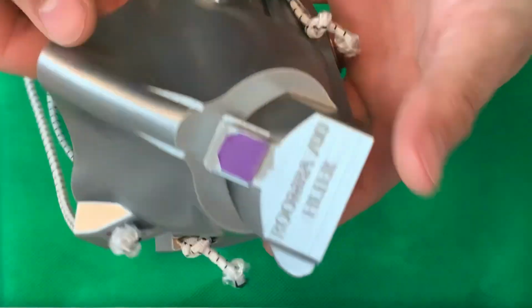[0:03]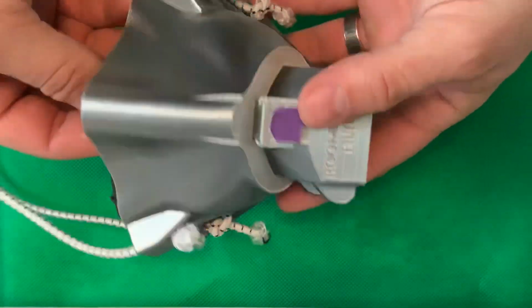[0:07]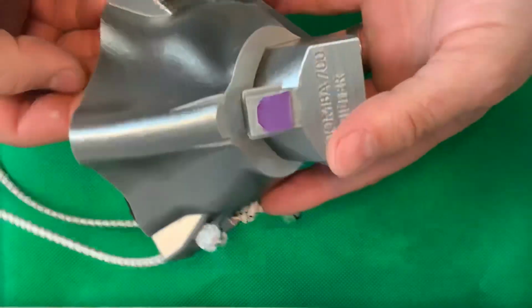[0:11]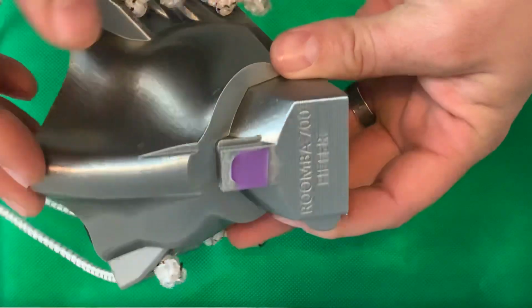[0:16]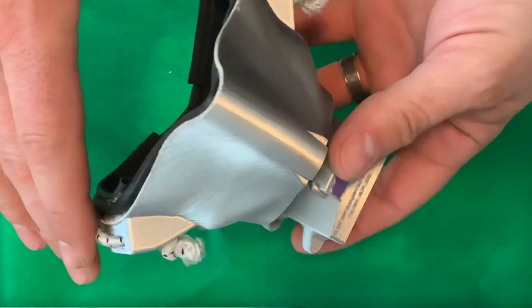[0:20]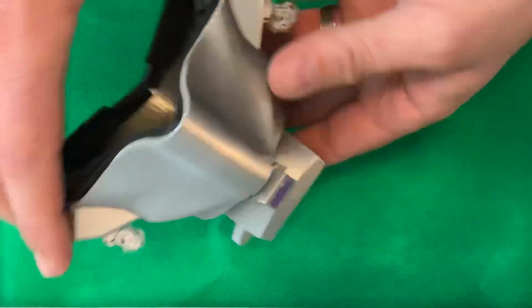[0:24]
I have 400 seemingly different files on Thingiverse, but they're all essentially revolving around a single concept, and that is to be able to 3D print something that will provide a little bit better protection than, say, a t-shirt or a bandana. But in order for you to be able to print successfully, we have to go over some things.
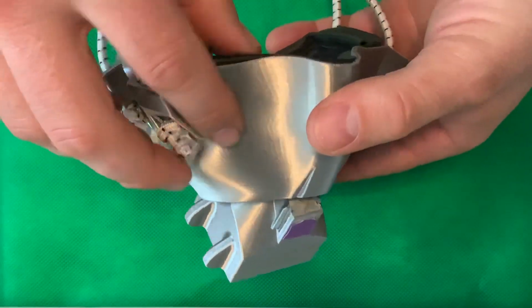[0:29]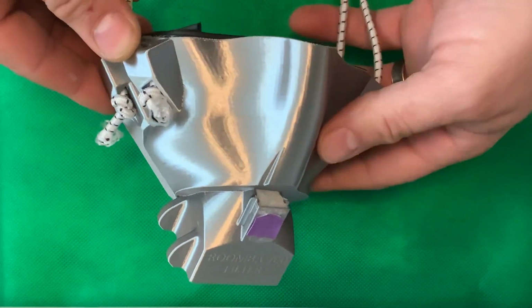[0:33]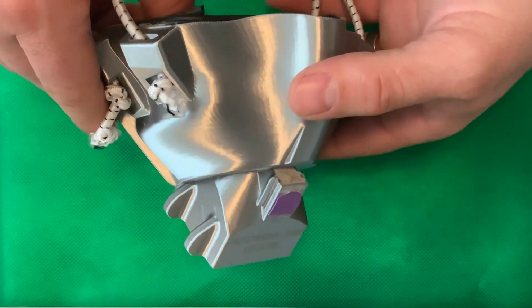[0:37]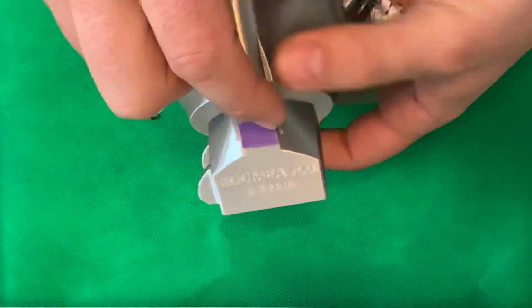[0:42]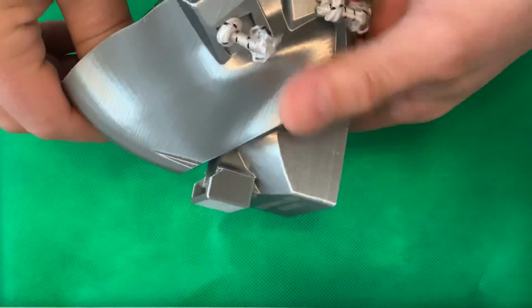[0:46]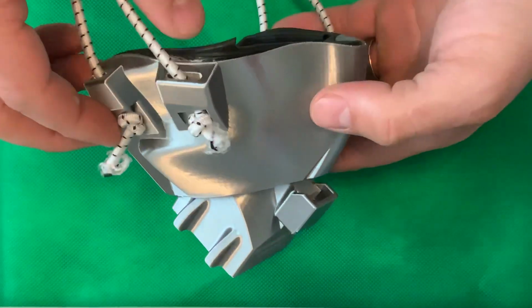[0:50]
One is the type of printer you're using. Most people, I assume, are printing with fused deposition modeling printers, FDM printers. These are the cheapest, most readily available printers found at most high schools, libraries, and things like that. Fused deposition modeling is a fantastic technology that enables very inexpensive prints. So a mask like this will print for probably like $3.
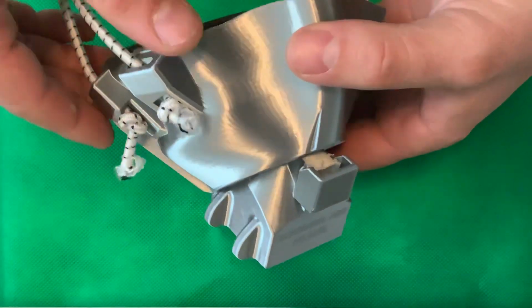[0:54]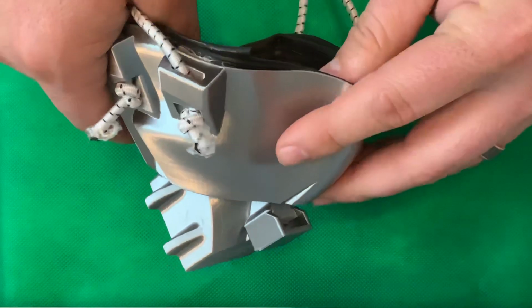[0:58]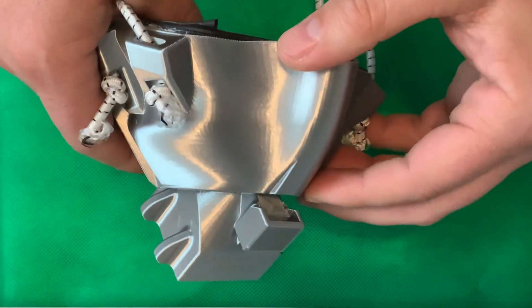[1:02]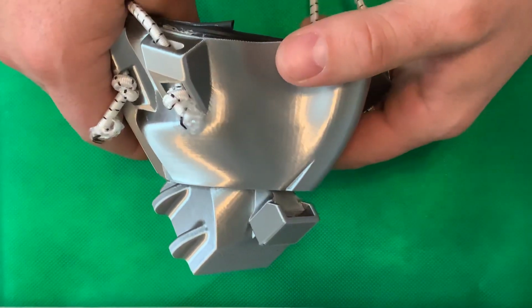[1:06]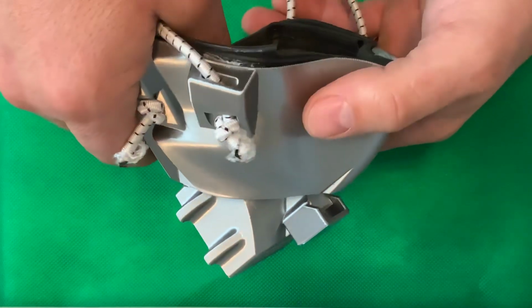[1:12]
Now, if you're using fused deposition modeling, we need to talk about some things. One of them is, what type of plastic are you using? There's many, many different types of plastic for FDM printing. The most expensive and super cool material is something called TPU. TPU is thermoplastic polyurethane. It is a flexible material.
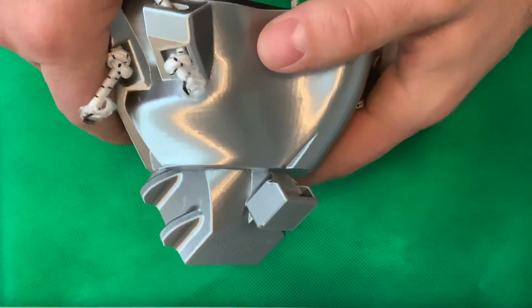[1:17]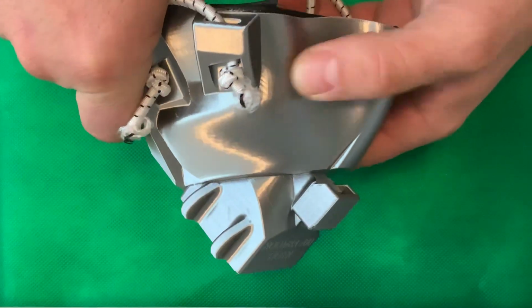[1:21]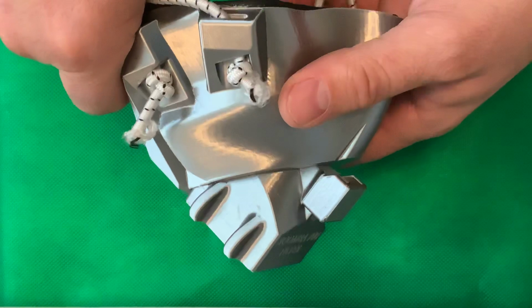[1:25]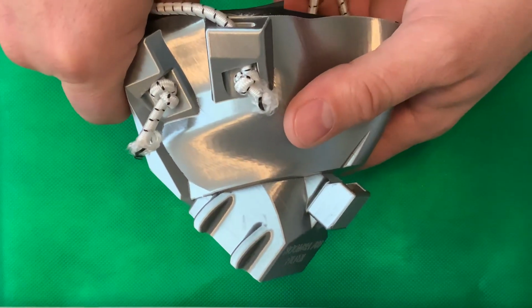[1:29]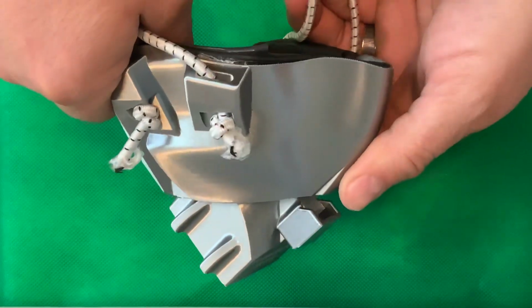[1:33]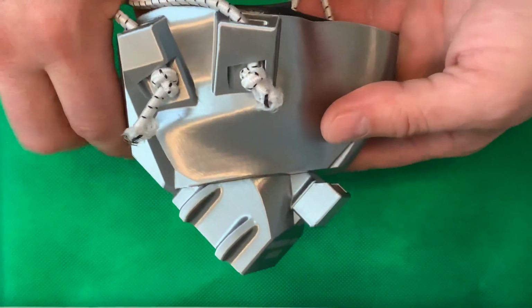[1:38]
I have a few TPU prints with this mask, and it's so, so awesome. The downside to TPU is that it's expensive, and it's also difficult for a lot of printers to print, and it is extremely slow. So a mask like this will take 18 to 24 hours to print in TPU. So most people are not going to print in TPU.
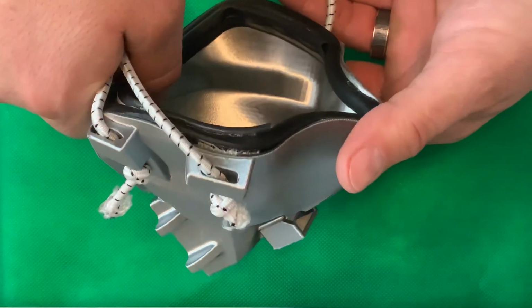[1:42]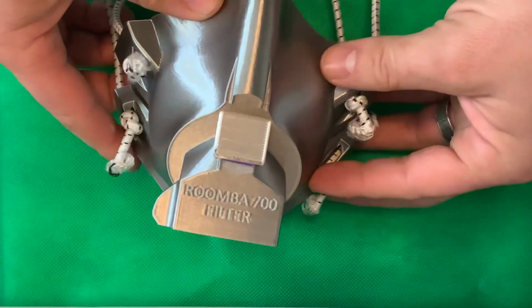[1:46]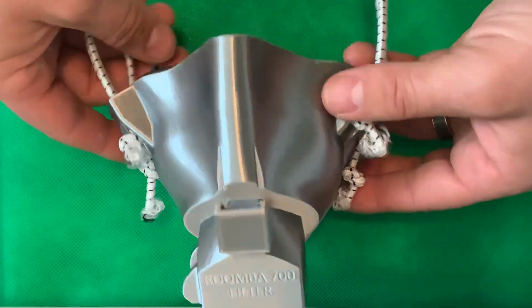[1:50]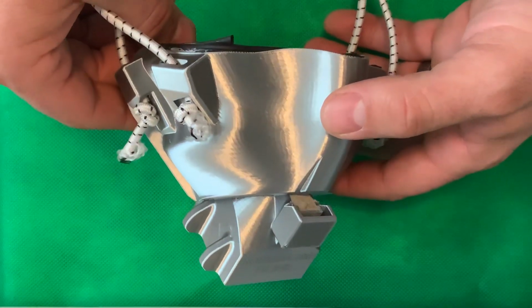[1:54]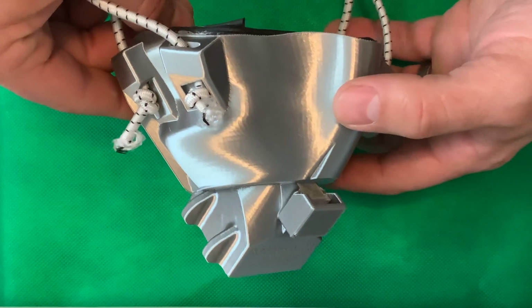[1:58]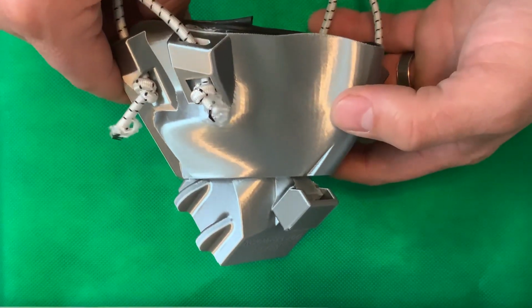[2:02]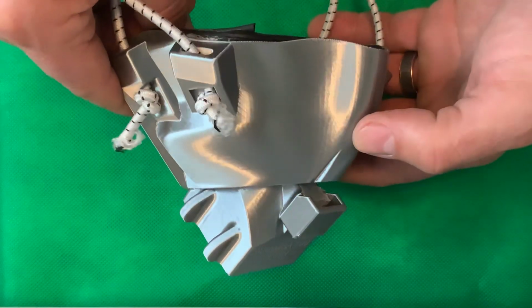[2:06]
The other type of material is PETG, which is polyethylene terephthalate. PETG is found in most water bottles, and it is a very biocompatible type of plastic. You could print PETG on most FDM printers. It does require a higher temperature, both print bed temperature and extrusion temperature. So you're going to be at more like 240, 250, 260 Celsius for the extruder, and the bed's going to be more like 80.
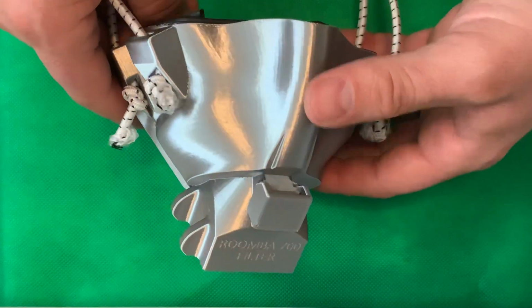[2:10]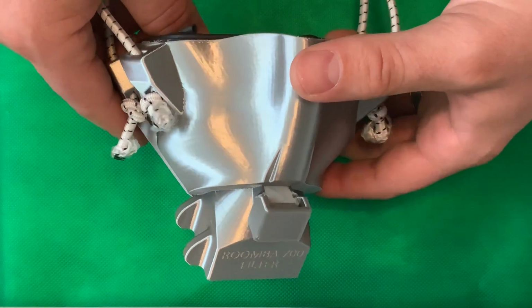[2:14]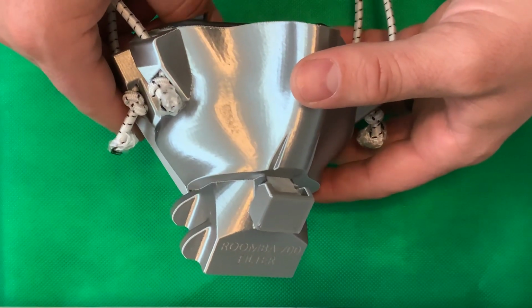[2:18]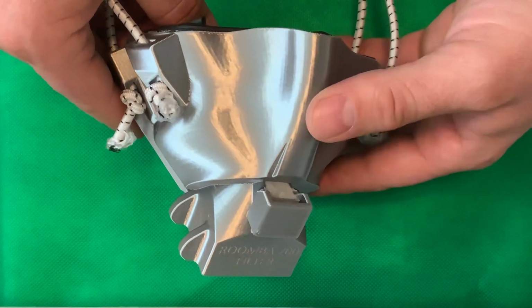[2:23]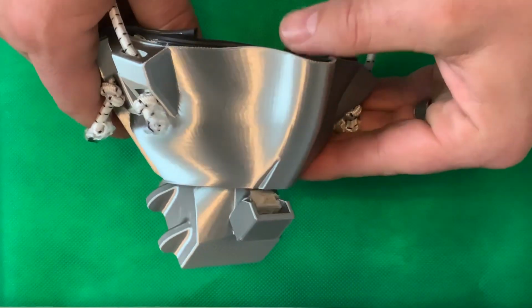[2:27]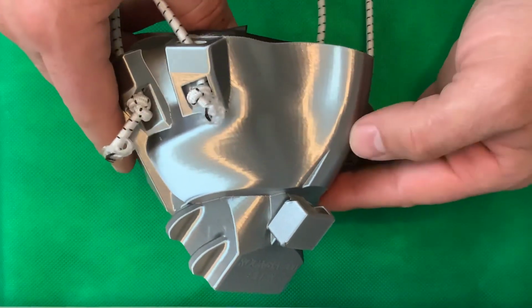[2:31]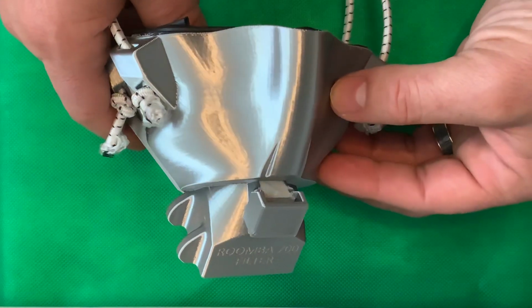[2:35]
That's a really good material to print from, and it is super durable, and it's more resistant to chemical sterilization agents such as isopropyl alcohol and hydrogen peroxide and things like that. PLA is what most people are printing out of. PLA is polylactic acid derived from plants. It's super inexpensive, and it's probably the most commonly printed material on FDM printers.
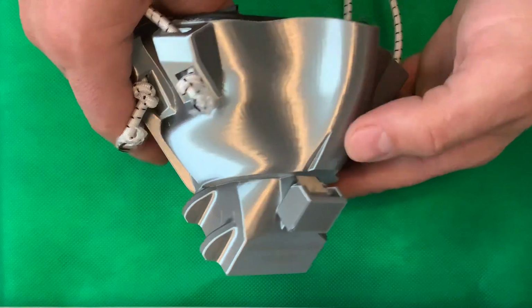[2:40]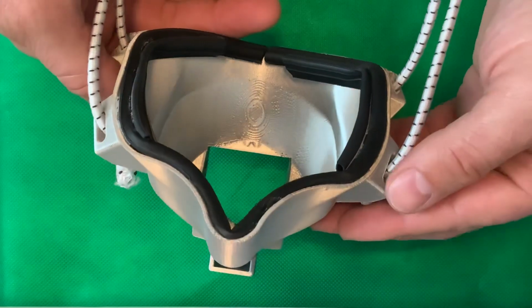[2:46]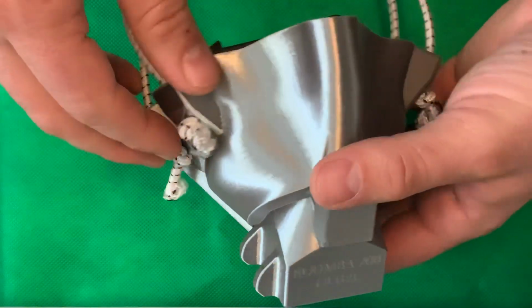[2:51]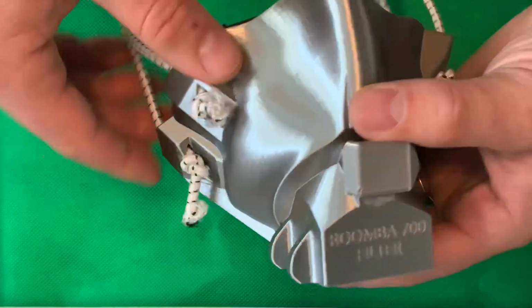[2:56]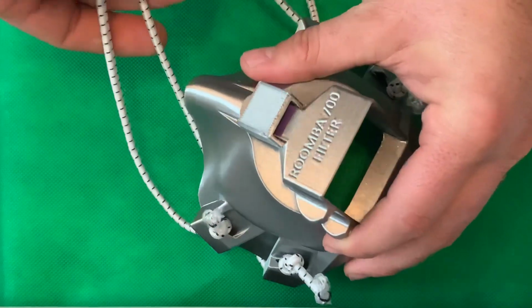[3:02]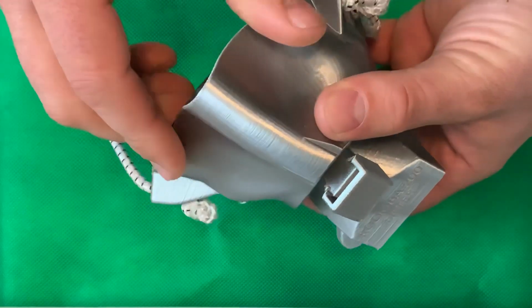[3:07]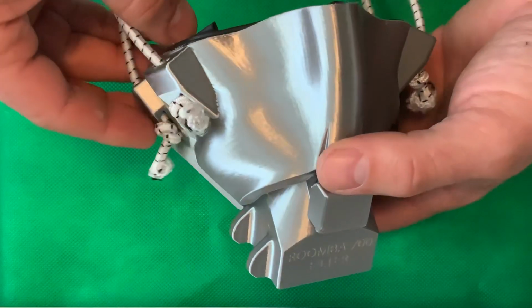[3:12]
Now, with that said, regardless of what material you're printing, there's some settings that we need to go over. And we'll talk about that in a minute. But with PLA, one advantage is that you could actually use a blow dryer, because it has such a low melting temperature. You could use a blow dryer or a hot water bath and basically dip this, without the elastic and the gasket, in the water bath. And then what you're going to do is conform it to your face, because it'll be flexible. It's a thermoplastic.
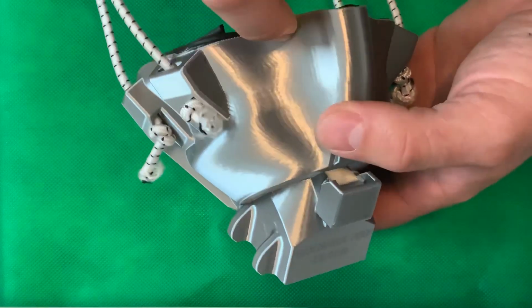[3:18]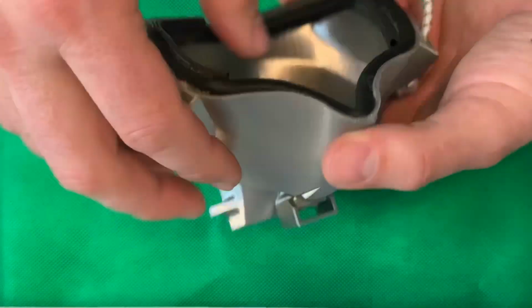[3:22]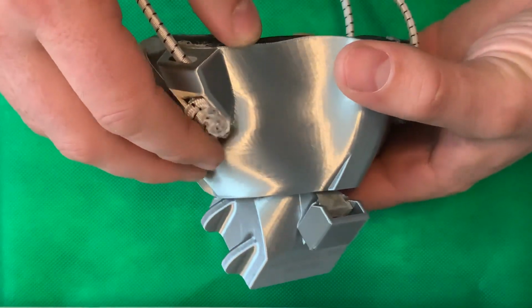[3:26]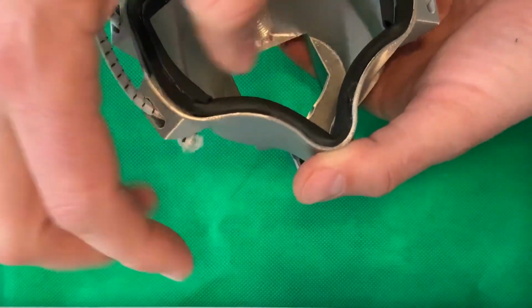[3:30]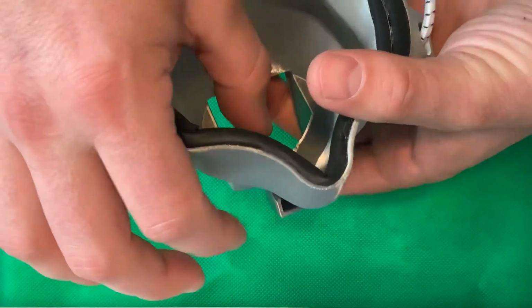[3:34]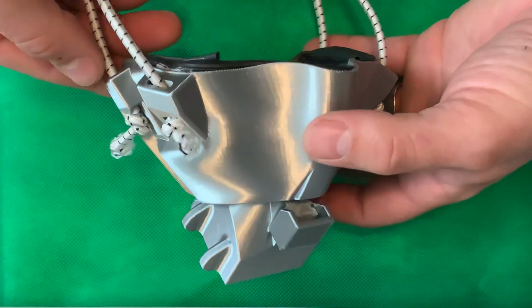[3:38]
Now, with that said, regardless of whether you're printing out of TPU, PLA, or PETG, you need to understand something about layer height and infill ratio and extrusion rate. So infill is the setting that determines how solid the print is. The layers between shell 1 and shell 2 on the inside, infill ratio is how much of that's actually filled in. Now, typically when we print with FDM, we're doing an infill of 15 to 30%.
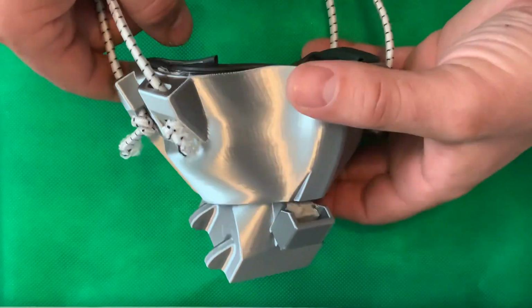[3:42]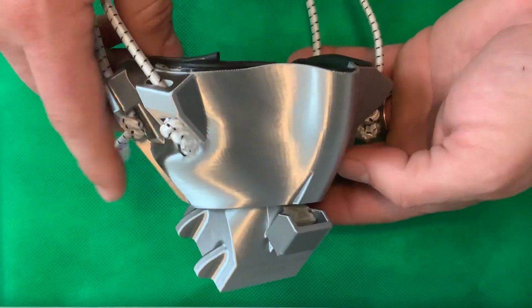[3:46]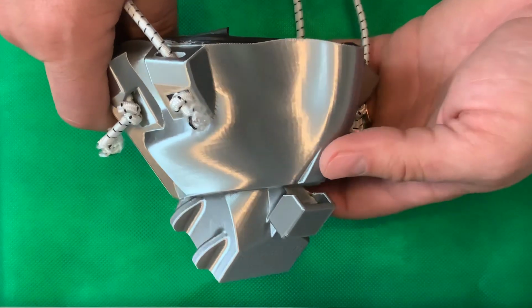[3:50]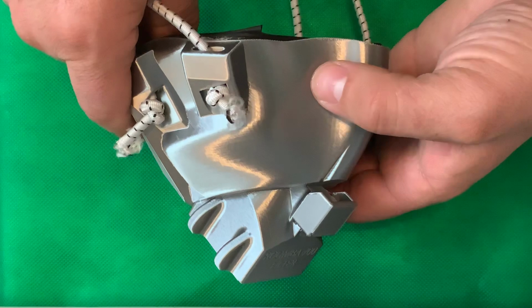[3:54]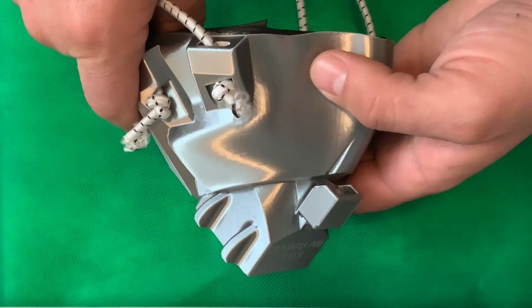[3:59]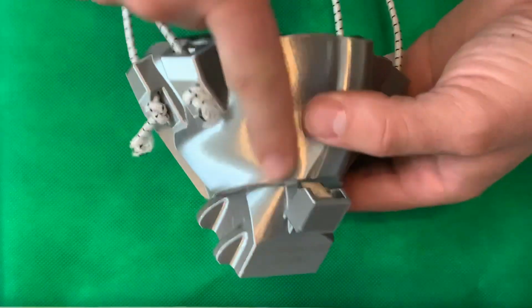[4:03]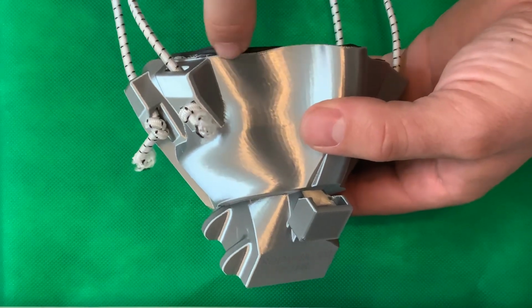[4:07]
But for this type of print where we want it to be airtight, we need to do an infill of 100%. 100% infill, that's super important. There's been numerous publications and peer-reviewed journals that talk about how to print with FDM printers and have it be gas tight. Which, if your mask isn't gas tight, then there's really no point in having a mask. So infill of 100%. The other thing that determines whether your mask is printed gas tight is if there's any micro gaps between the individual layers.
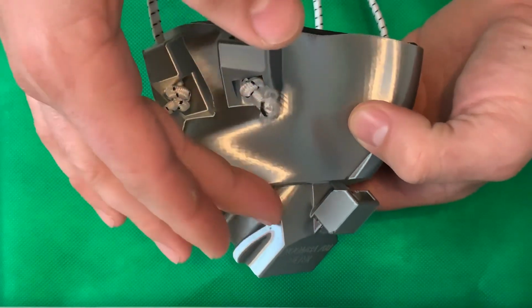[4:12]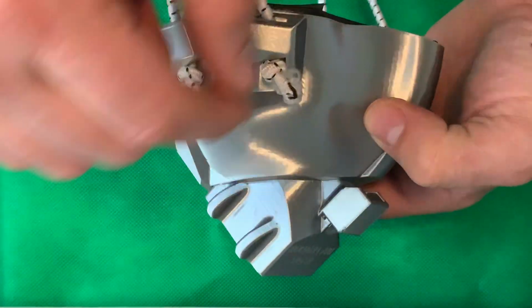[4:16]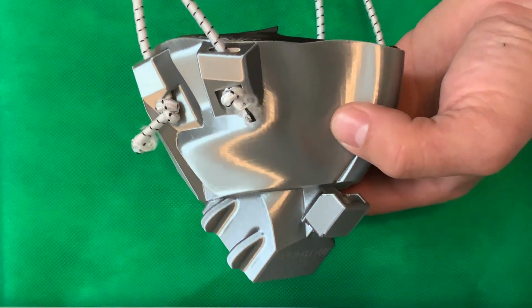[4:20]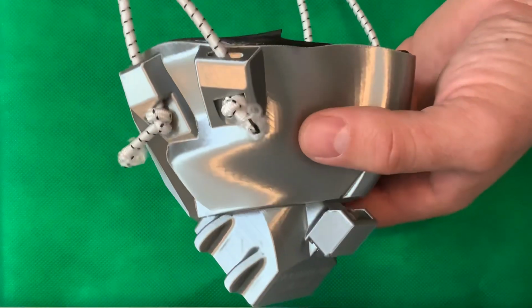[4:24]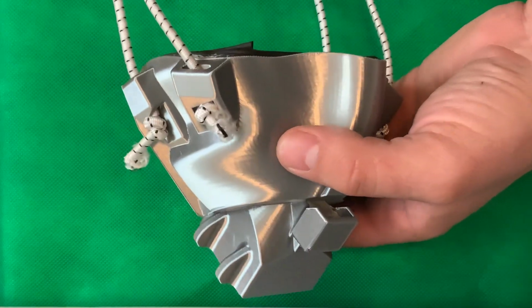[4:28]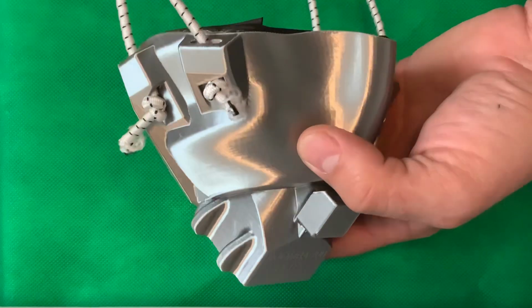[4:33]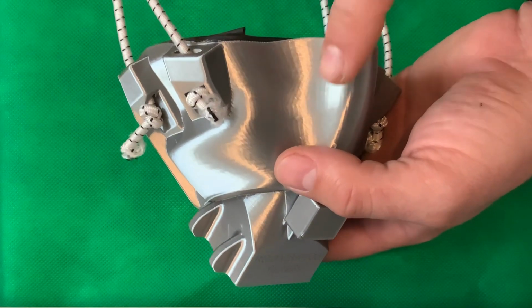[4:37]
Typically, FDM printers work by 100 to 200 micron layers, and it slowly builds up, and the plastic is being melted in layer by layer. If there's gaps between the layers, then you're not going to have a seal. Well, there's been some studies that have shown that if you have a flow rate of 98 or an infill rate of 100%, then you're going to be gas tight. What is flow rate, and how do you change it? Well, most printers, you could change flow rate in your slicer settings, just like you can for infill.
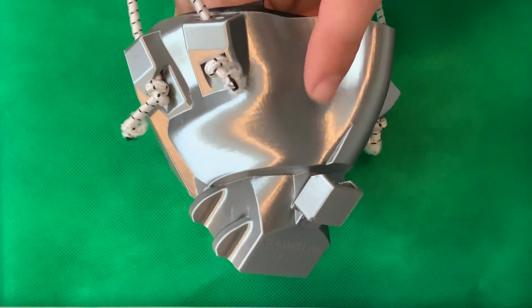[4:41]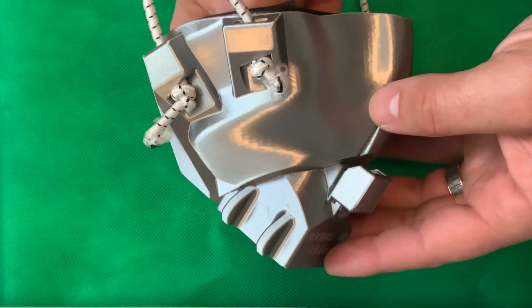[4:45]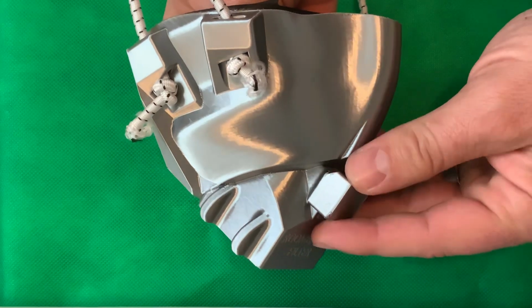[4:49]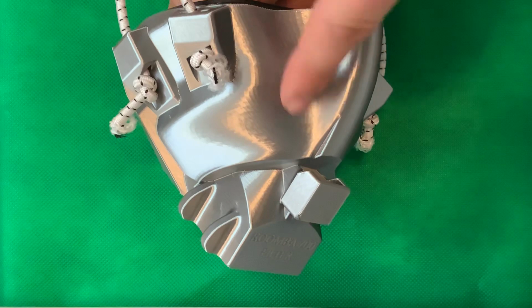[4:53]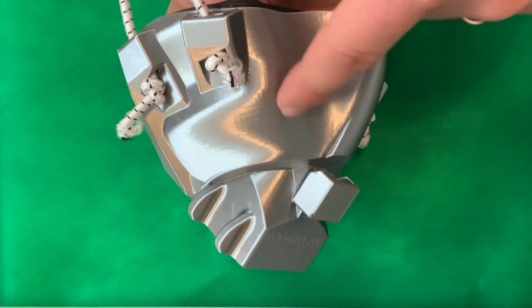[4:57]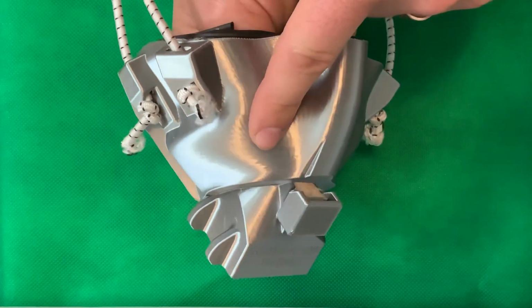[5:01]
Flow rate is basically how much plastic is laid down on each layer. Now, typically, if you look at, say, the Prusa Mark III, flow rate is going to default for PLA at about 95. Studies show that you need to be at least 98 in order to get a gas seal. What it's doing at 98 is depositing extra plastic for each layer to make sure that the individual layers are fused together in a more controlled fashion.
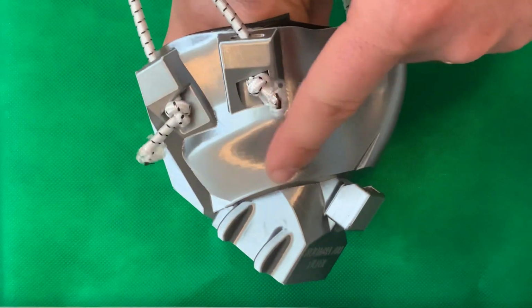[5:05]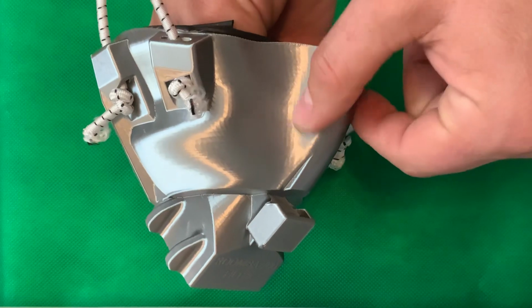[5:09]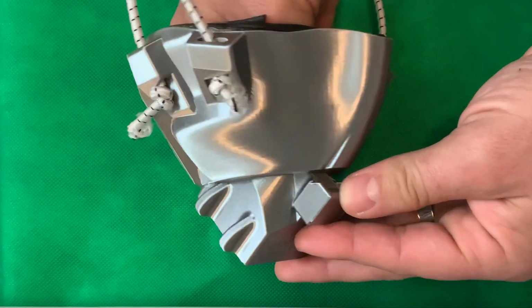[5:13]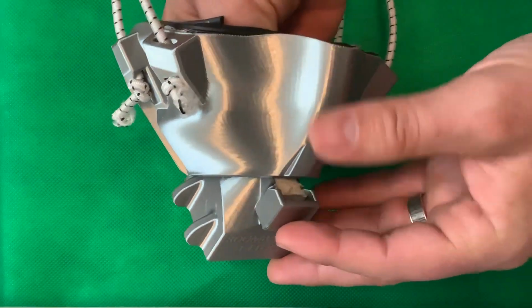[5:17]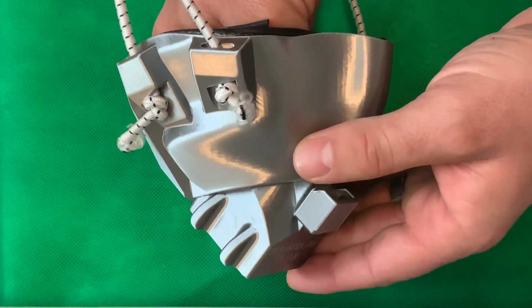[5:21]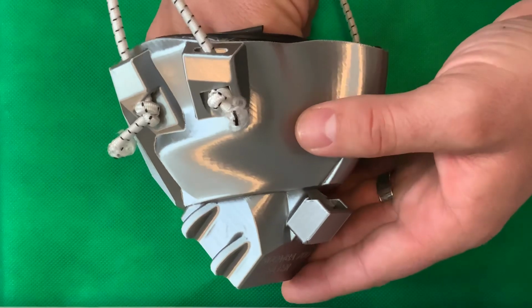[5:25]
It won't be as pretty of a print if you print with a higher flow rate because you'll actually see little ripples in it, but it's going to be a more sealed print. The other way that you could change the amount of plastic laid down is by your extrusion multiplier. Extrusion multiplier is very similar to flow rate, and you could set that to 1.5, 1.2, anything above 1, and you're going to get a seal. So that's going over that.
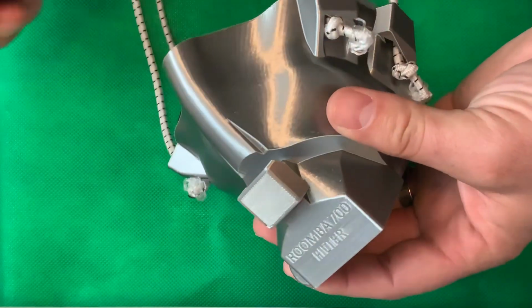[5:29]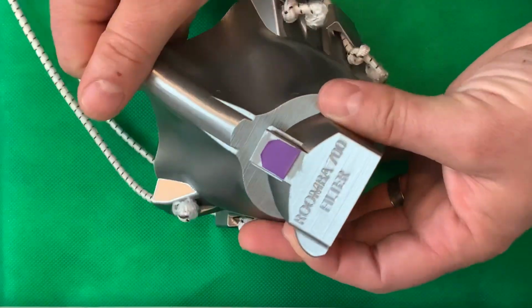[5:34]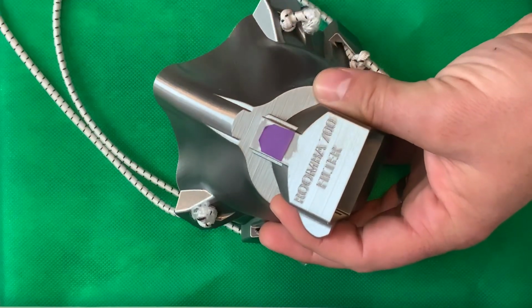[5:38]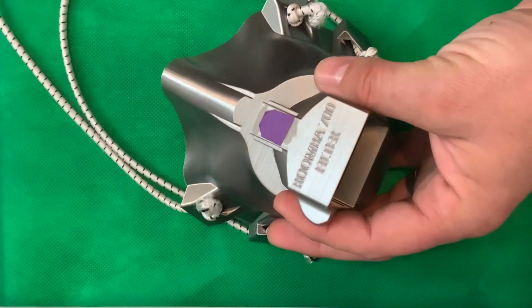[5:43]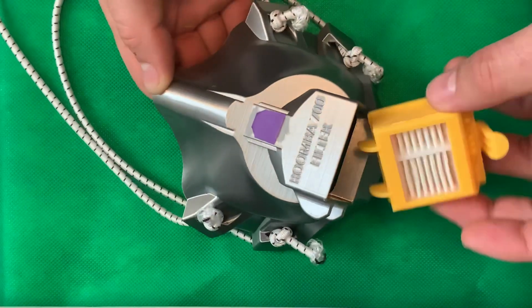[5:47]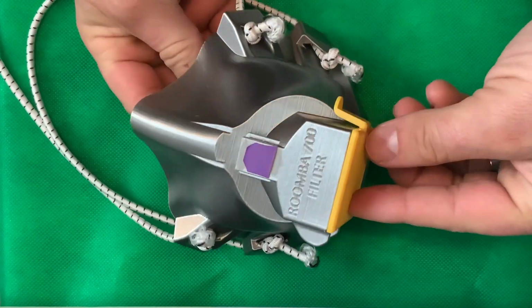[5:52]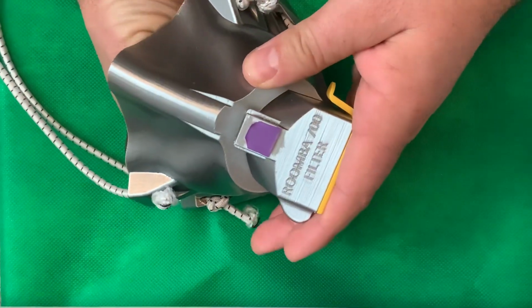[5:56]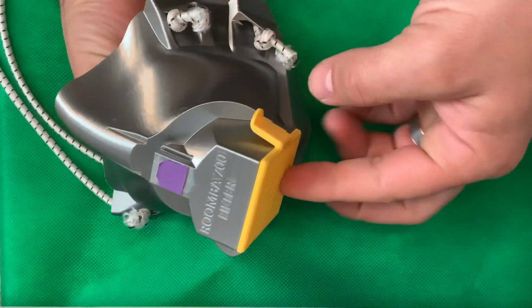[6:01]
Now, a lot of people said, hey, did you know that your print has a hole in it right here? I'm like, yeah, of course I do. And what that hole is, it's for a rubber valve, an exhalation gasket, to be glued in place. The way that it works is when you place your filter in place, the resistance of air coming in is such that, especially if you get a seal around your face, there's suction pressure that pushes this valve down airtight so that all the air is coming in through here.
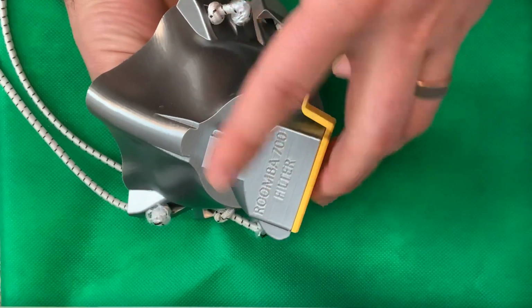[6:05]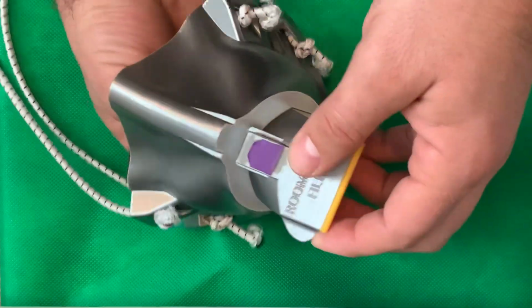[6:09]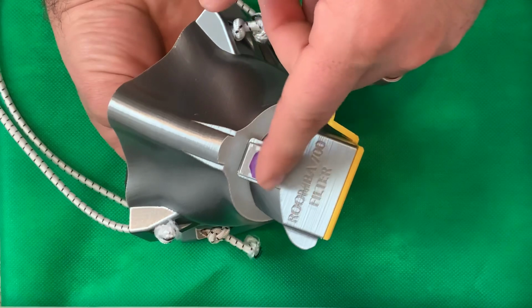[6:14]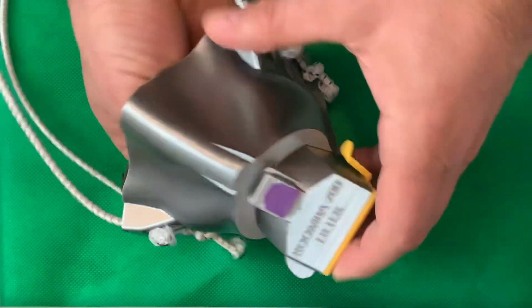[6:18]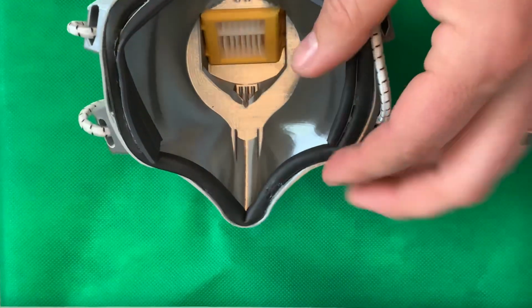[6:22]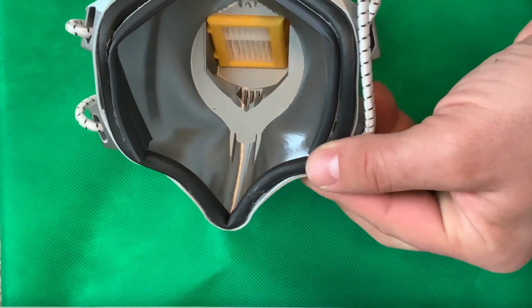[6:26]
When you exhale, it's going to follow the path of least resistance, which is this valve is just going to flap open and air is going to release. Now, you might say, well, what if you're sick and you're breathing through here and it's exhaling out of here? Is that going to protect people? No, it's not. So some people are actually putting a vacuum bag HEPA filter right here in that exhalation port, which is one extra step that you could do.
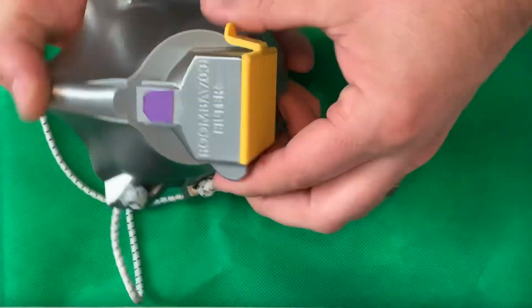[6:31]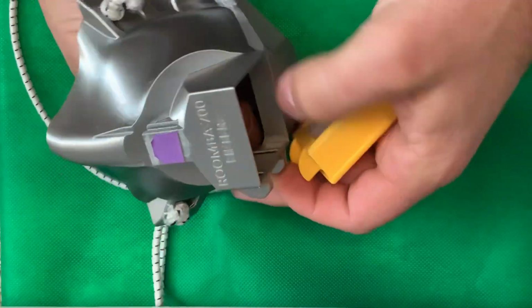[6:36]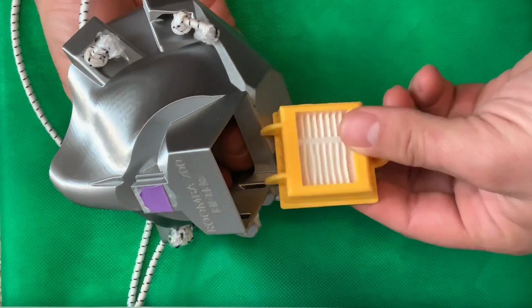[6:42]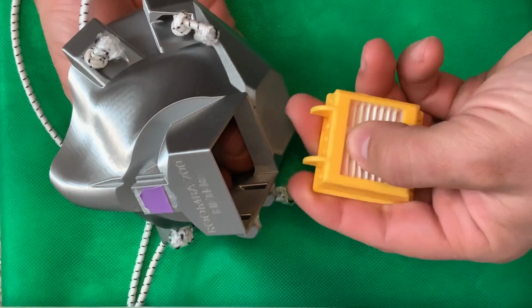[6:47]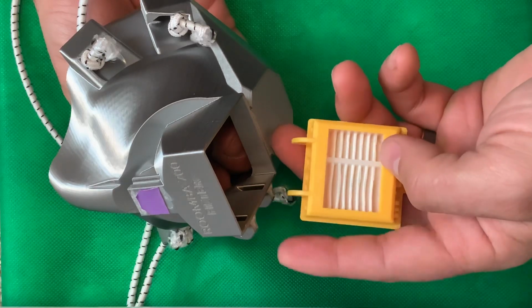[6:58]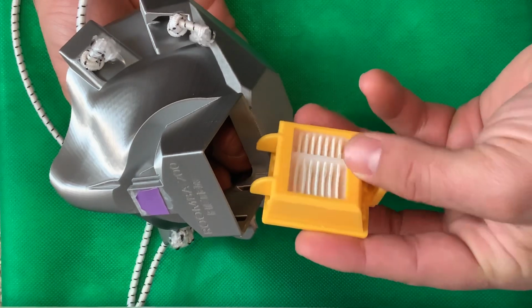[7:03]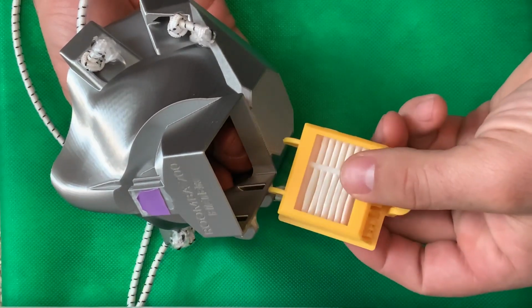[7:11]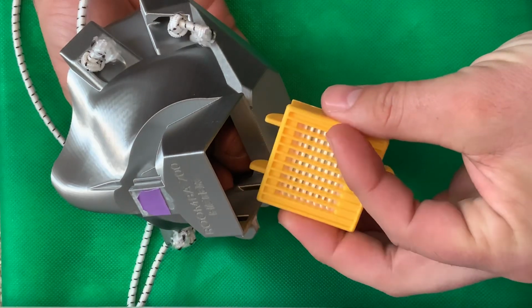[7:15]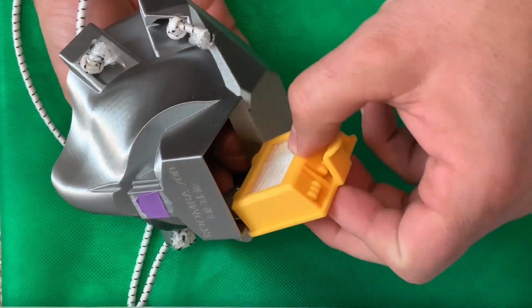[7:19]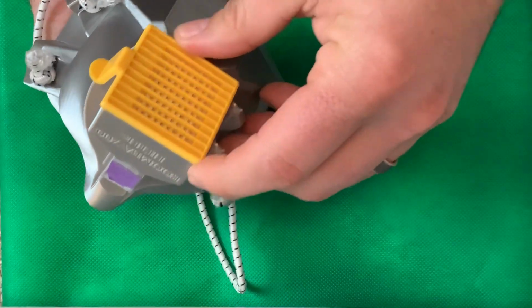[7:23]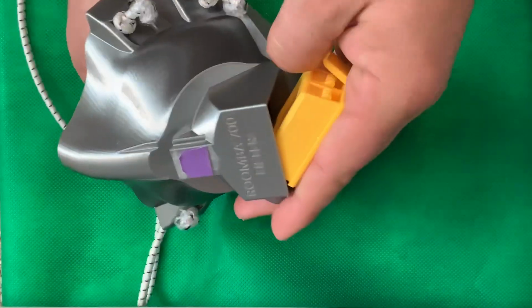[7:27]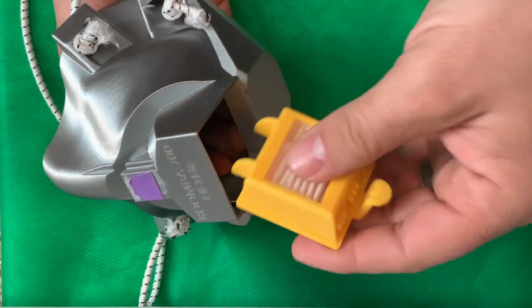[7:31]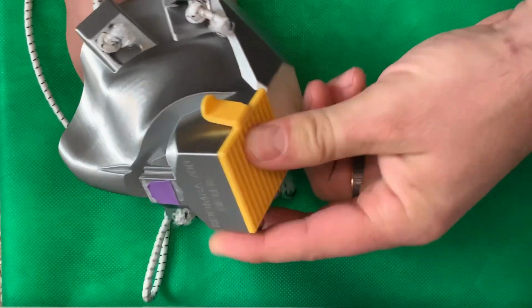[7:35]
If you're buying non-official filters, the real ones are actually quite expensive. The knockoffs are not expensive at all. They're like a dollar a piece. So this snaps in. Now you might say, well, what about the gap here? Well, you could use hot glue or an O-ring gasket, but it fits really tight, but it's still probably not airtight. So you want to use something that's going to seal if you put this in, okay?
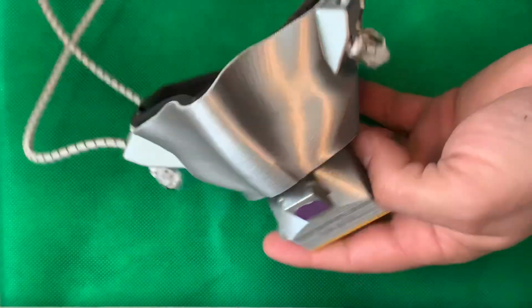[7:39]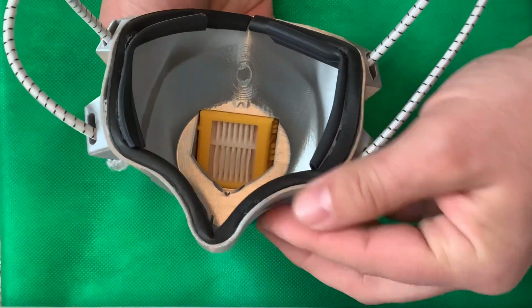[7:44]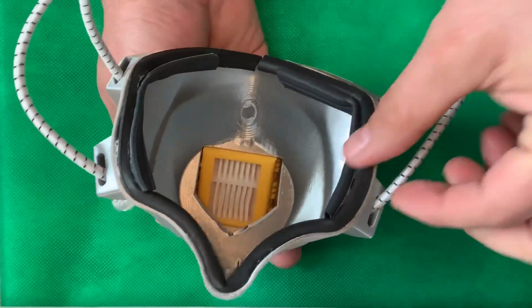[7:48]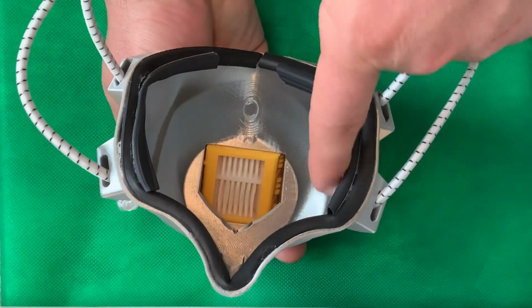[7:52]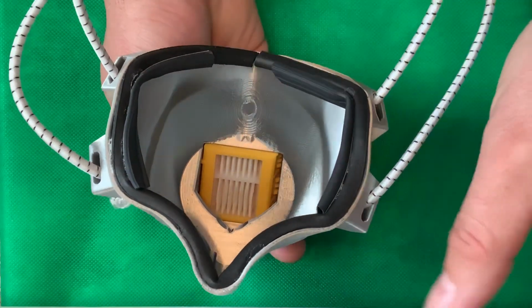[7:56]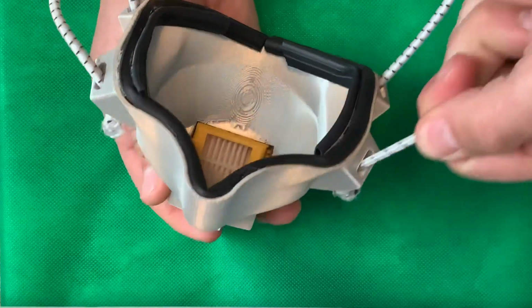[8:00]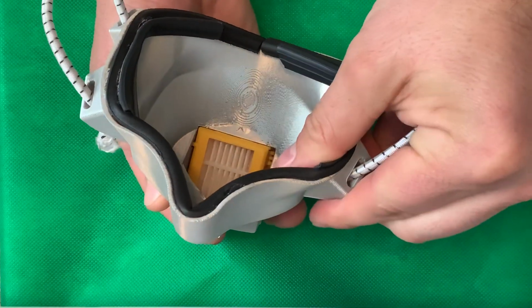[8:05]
So a couple other things about this mask. If you're not heating it and conforming it to your face, which if you are, be really careful. Don't burn yourself. Just be super careful. What you want to do is use gaskets. These are silicone gaskets found at most hardware stores. There's also medical grade silicone that you could use. When you have the proper elastic, which by the way, this is marine elastic found at most hardware stores, it's going to compress this so much against your face, you're going to create a seal.
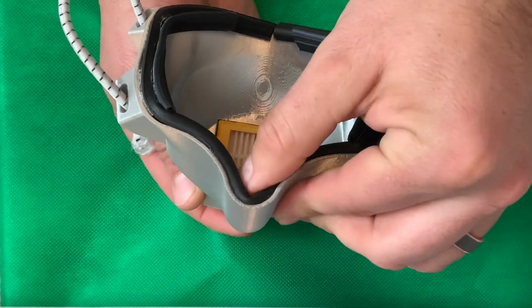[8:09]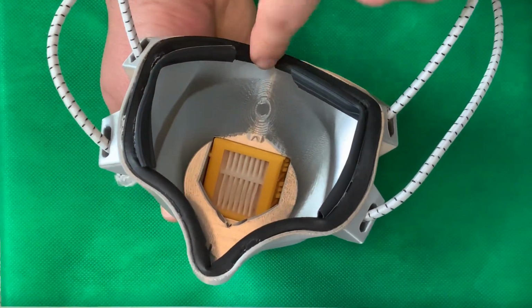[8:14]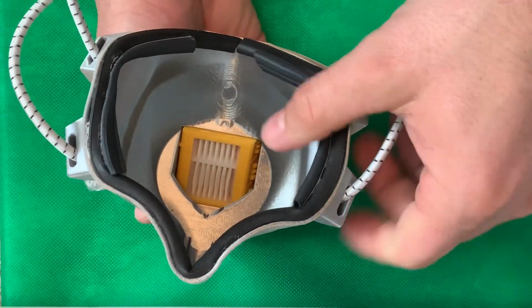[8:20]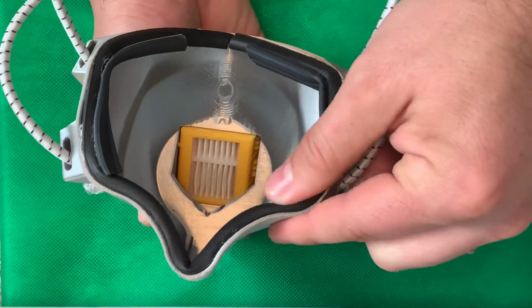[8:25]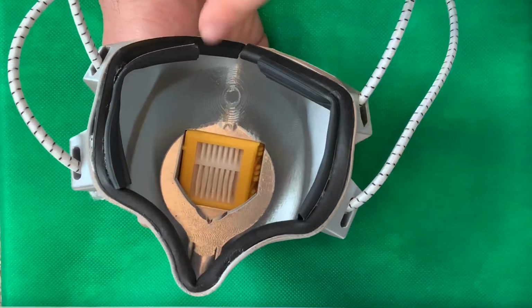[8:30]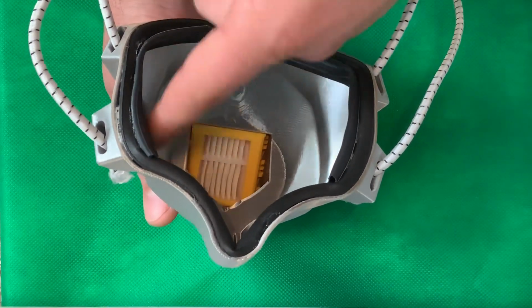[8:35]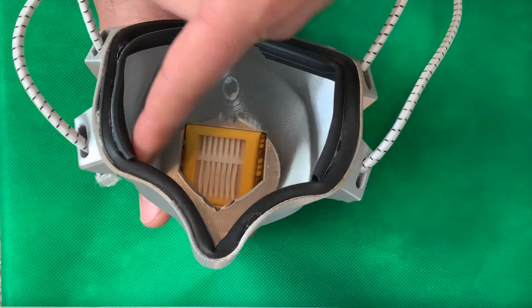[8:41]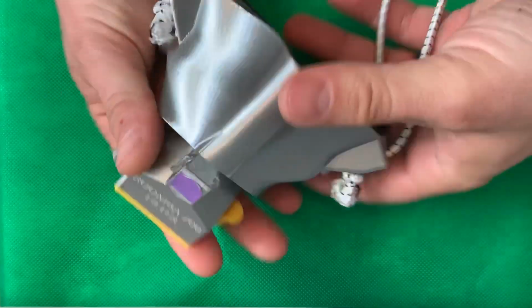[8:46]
And I have tested this mask for a seal around my face, and it does form an airtight seal. So that's one thing that you need to understand. You guys are probably not going to be able to test yourself and get this fit checked, but you need to understand that this is something that needs to be tight around your face. And for me, that required two layers of gasket material here and only one at the nose and chin area. You could use window seal material, single-sided foam tape, neoprene. Some people were using yoga mat material with double-sided tape. And some people are just heat treating these and conforming them to their face, things like that.
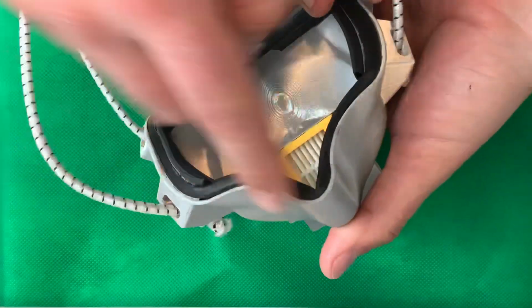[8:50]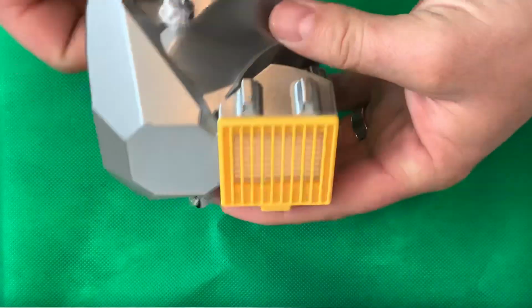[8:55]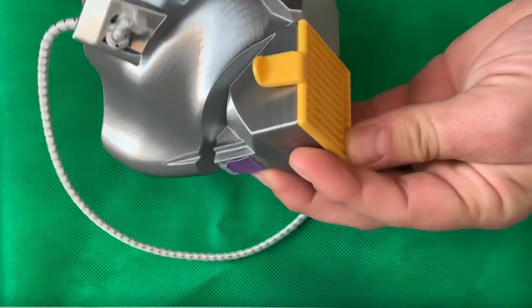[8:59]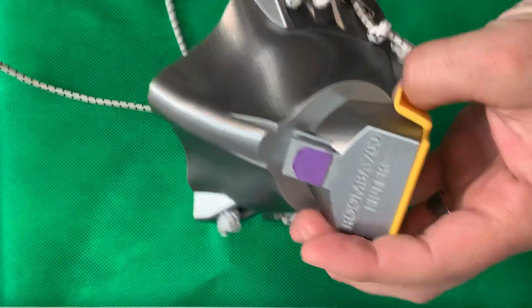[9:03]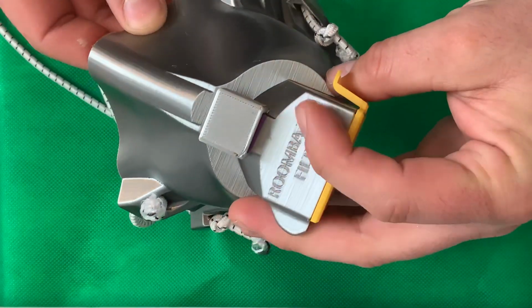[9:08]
It's roughly about 15 inches of material that you'll need. Okay, so moving on, people had concerns. Well, this is a relatively small filter compared to some of the ones from 3M, some of the respirators. And so what we decided is we came up with a Roomba i7 filter.
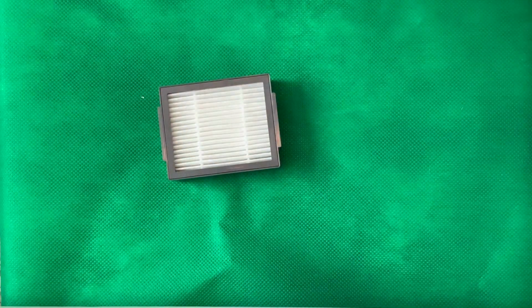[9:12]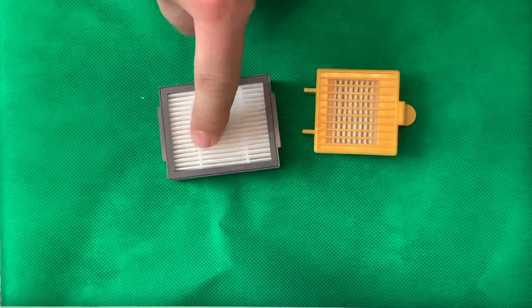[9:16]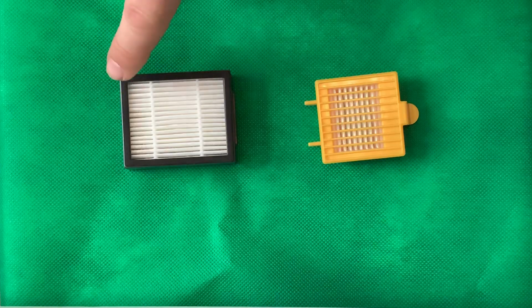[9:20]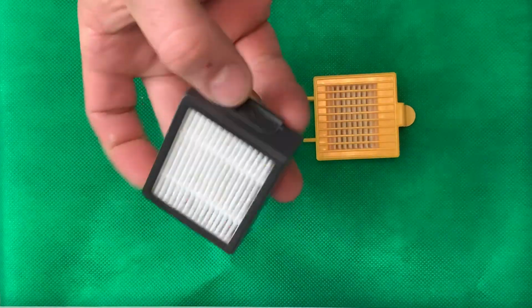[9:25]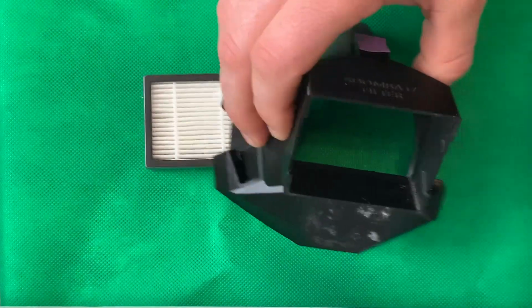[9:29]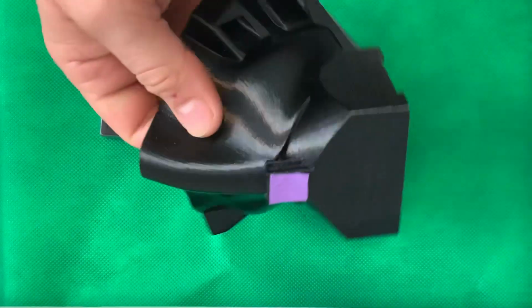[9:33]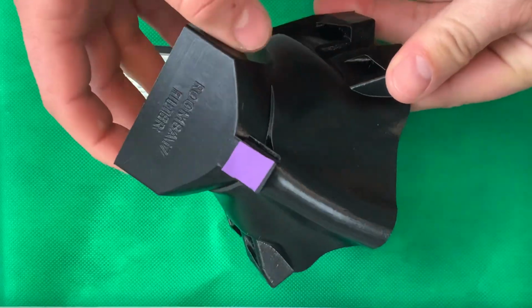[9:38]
Now, if you compare the sizes, they're drastically different. In fact, the i7 is a much better filter. It's bigger all around, and it actually has this neoprene gasket right here built into the filter. See that? And we designed another mask. This one is printed out of PETG.
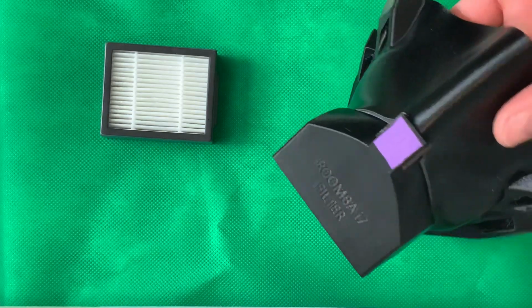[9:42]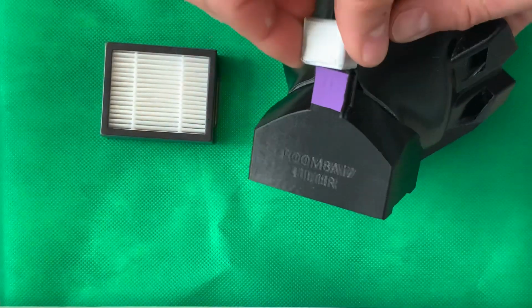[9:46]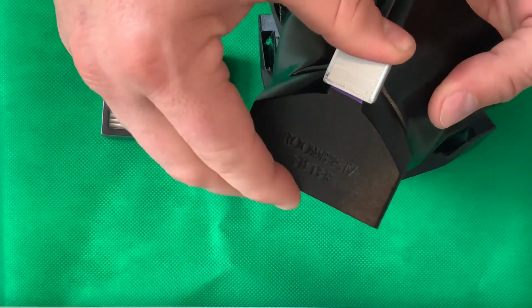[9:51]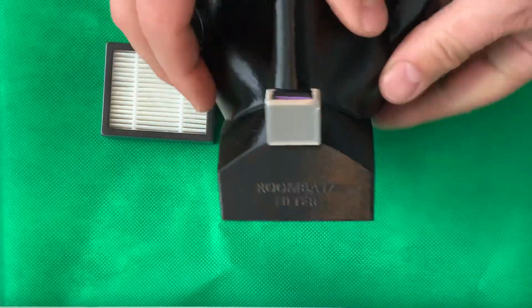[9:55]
So cool looking. It's like a Darth Vader mask. It's my favorite mask that we have. And of course, you could print the cover as well. Actually, I got it on backwards. Printed out of whatever material you want.
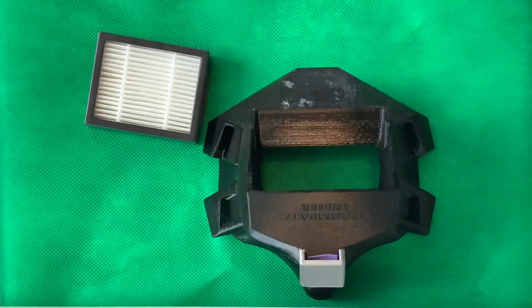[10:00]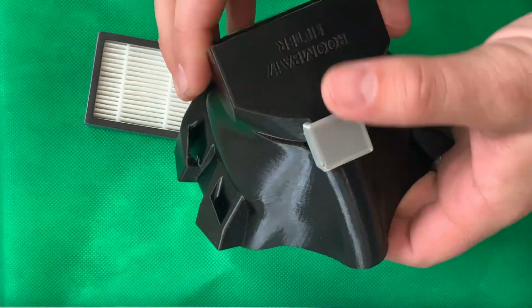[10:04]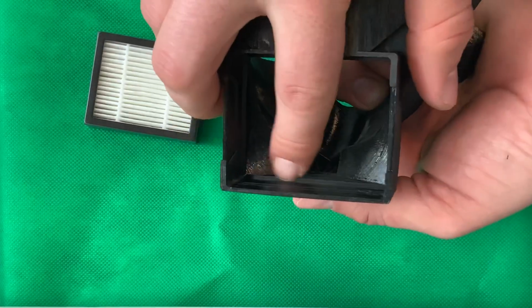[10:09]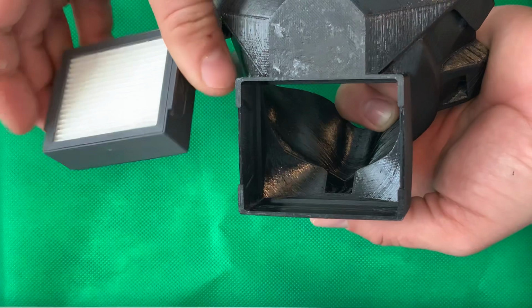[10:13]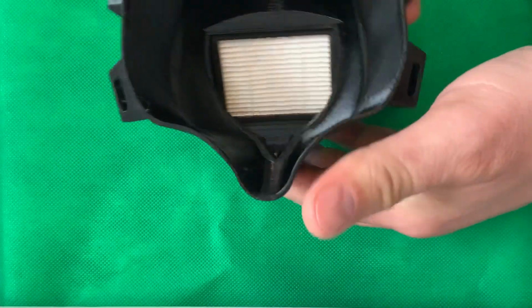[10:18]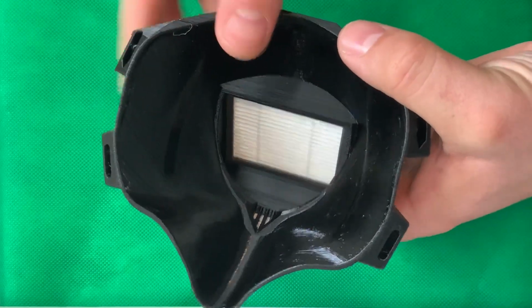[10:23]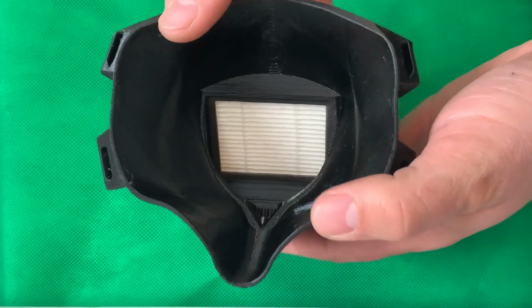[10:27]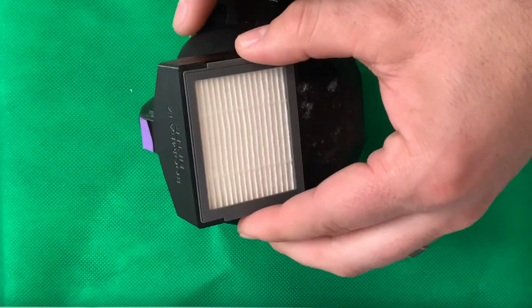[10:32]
So one thing that we need to talk about with the i7 is a little feature that's built in. You see this flange here? This neoprene gasket will snap in and press against that flange and seal it all the way around. So there's no need to hot glue these in. It's a super tight fit. It's a really cool design. Better filter system all the way.
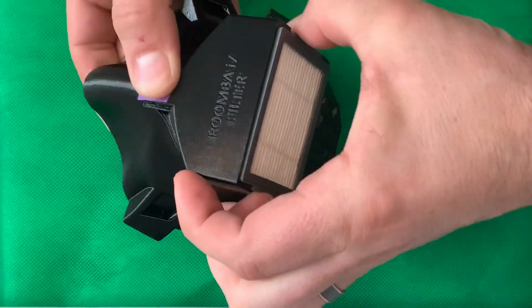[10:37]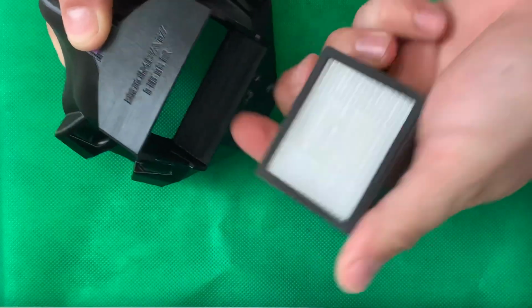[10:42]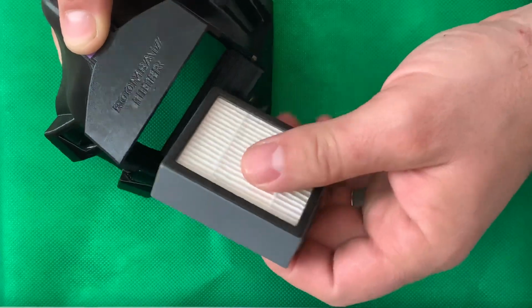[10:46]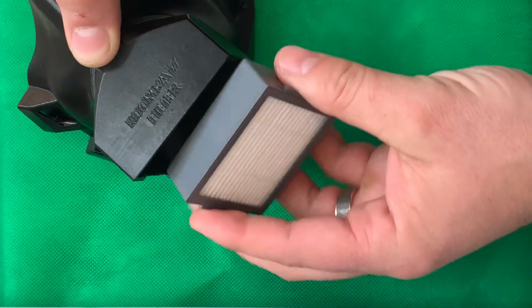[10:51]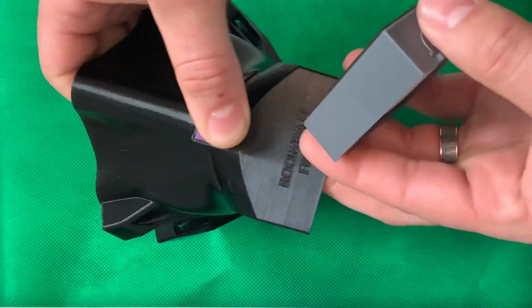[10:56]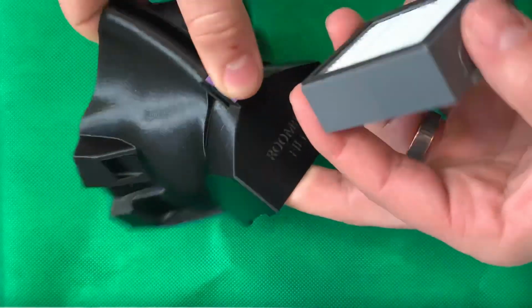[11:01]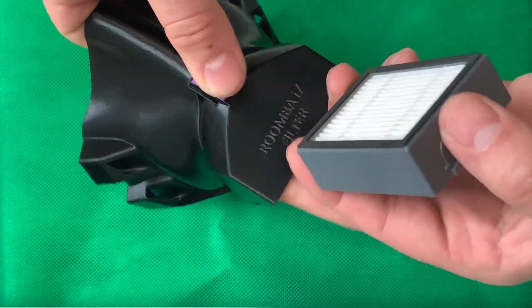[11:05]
These are expensive. If you get the real ones, the true HEPA ones, for three, it's like $30. So it's like $10 a piece. But now let's say you're in a hospital setting, you could just chuck this at the end of the day, or you could use hydrogen peroxide vapor sterilization of the filter. For the mask itself, if it's PETG, you could soak the whole thing in isopropyl alcohol for 5 minutes, literally just dunk the whole thing, or you could spray it down. You could use hydrogen peroxide gas sterilization of that as well.
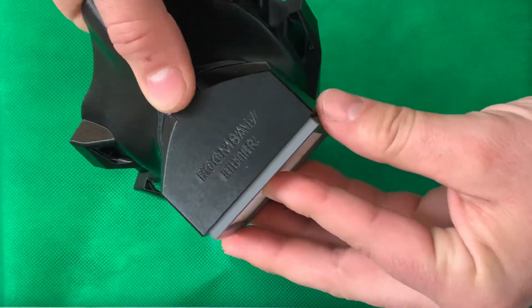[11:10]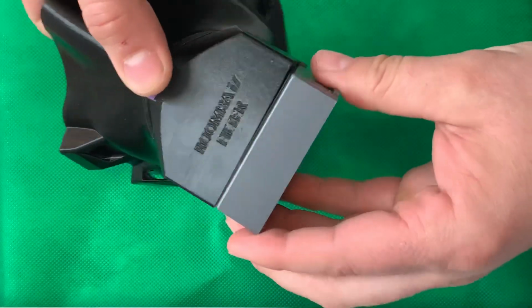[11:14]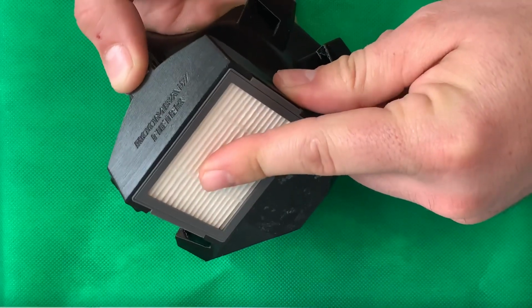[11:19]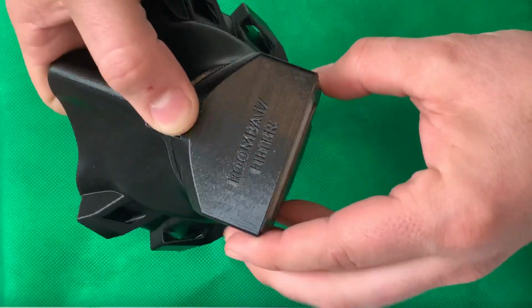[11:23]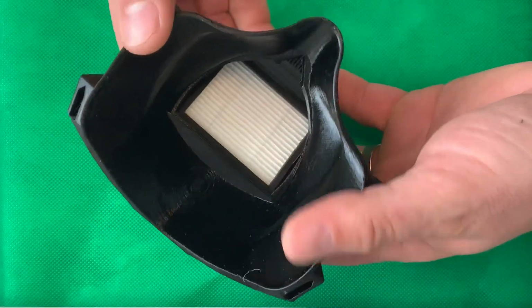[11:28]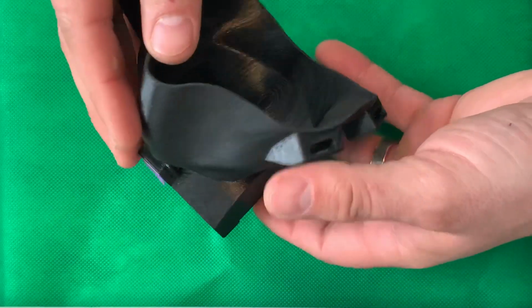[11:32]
Most people are just chucking this and wiping this down. It can get expensive with these. The knockoffs are super cheap. You get a pack of 20 for like $20, so they become more like $1 a piece. But like I said, I can't guarantee the HEPA rating of those. It's important to get true HEPA filters.
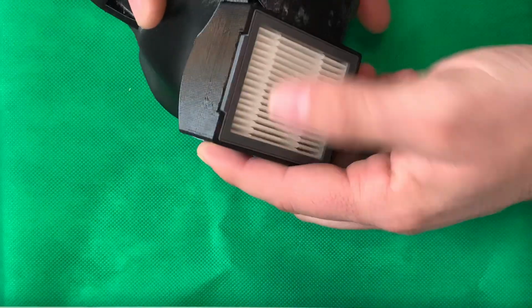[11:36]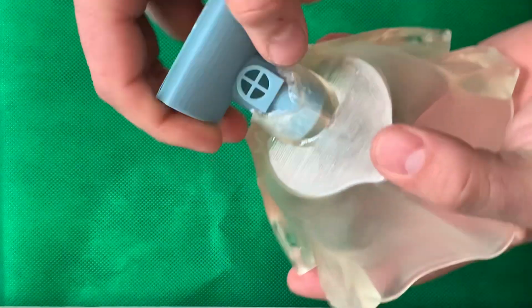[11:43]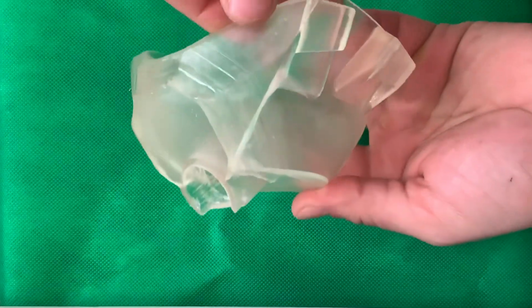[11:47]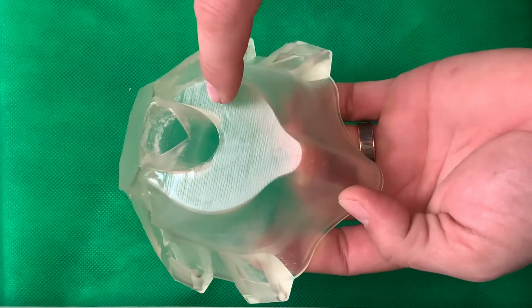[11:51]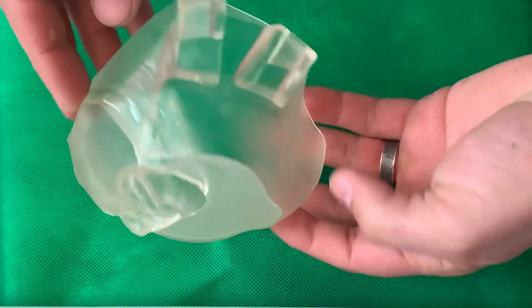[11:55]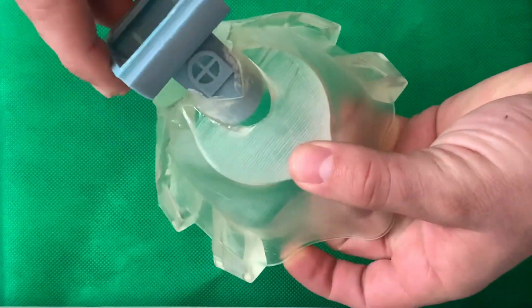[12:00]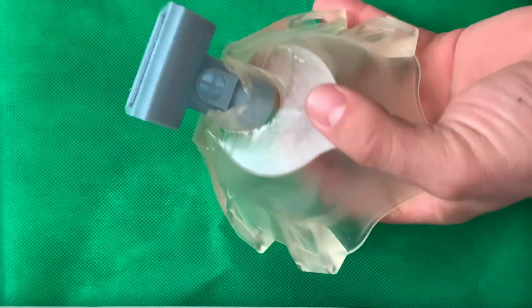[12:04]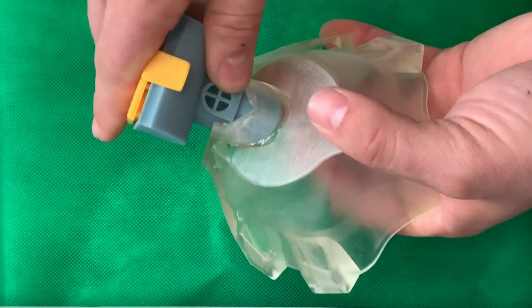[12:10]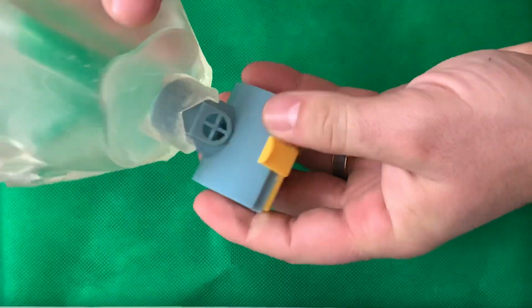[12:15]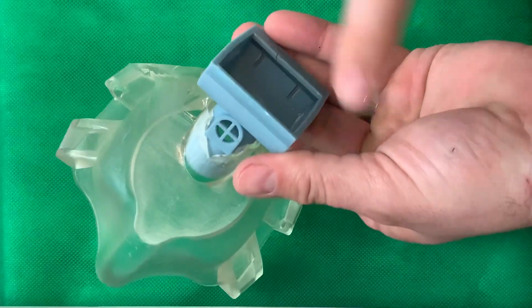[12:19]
So let's also talk about another system, because people were like, well, I like this, but I don't like that it's integrated with the mask. So we have another mask. Now, this one just happens to be printed out of medical-grade autoclavable resin on a fancy printer called a SprintRay Pro. It's a DLP printer. This whole thing could be autoclaved at the end of the day, and you could snap in a new system like this with the valve properly placed. We have them available for all the various different filters. So we have it for the 700 here. And the i7, we also have our own MUSC design box that you actually cut your own HEPA filter out.
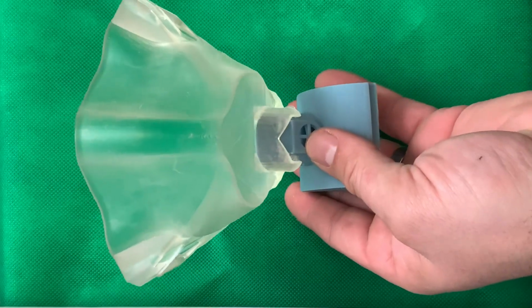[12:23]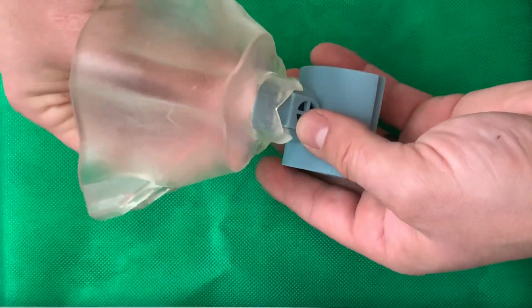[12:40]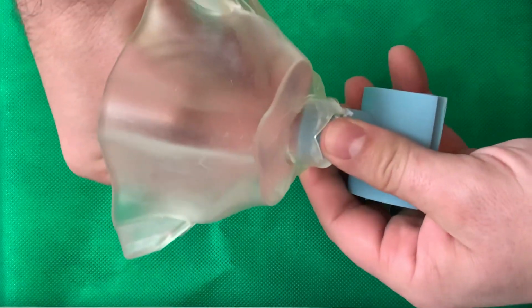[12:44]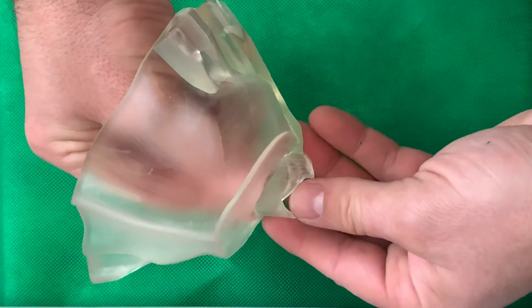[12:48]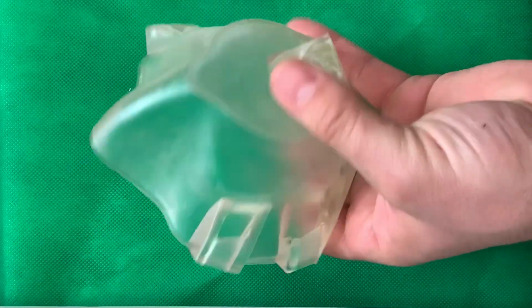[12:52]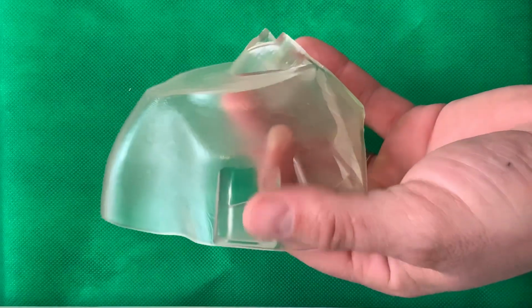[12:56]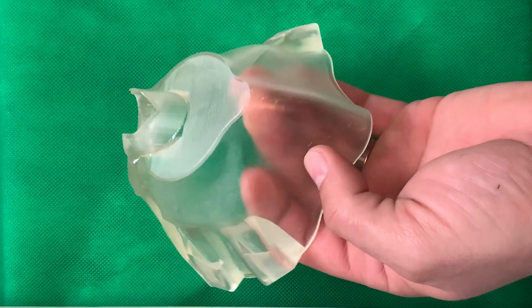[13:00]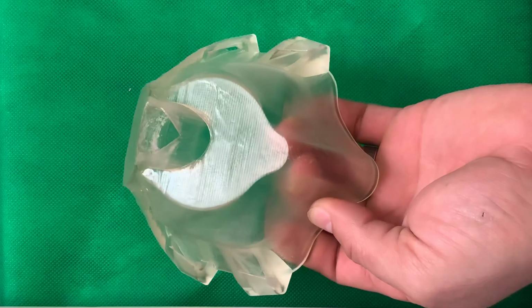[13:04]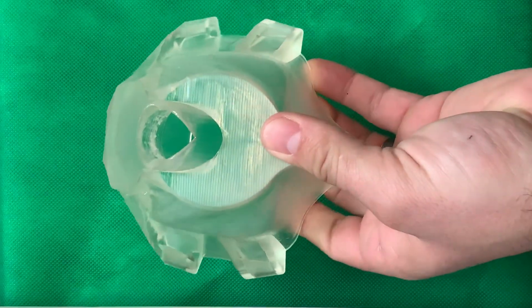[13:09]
Now, there's some dude online saying that if you cut a HEPA filter, you're gonna die from fiberglass inhalation or something like that. Totally not true. Most modern HEPA filters don't use fiberglass anymore. And so you can look at the MSDS of your HEPA filter to determine if it has fiberglass particles in it. Some MERV 16 still have fiberglass, but you need anything probably above a MERV 13 for your filter if you're buying giant filters and cutting them yourself. But anyway, I hope this clarifies some things. There's a lot of misinformation. Just to reiterate, misinformation is if you cut HEPA filters, you're going to die from lung cancer. Totally not true. But like I said, check the MSDS of your filter.
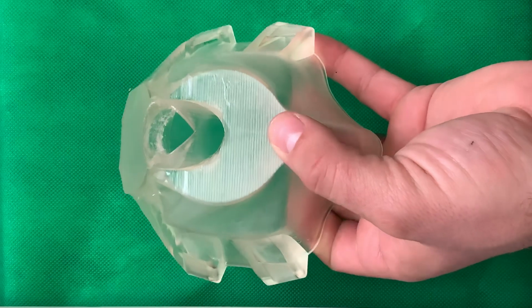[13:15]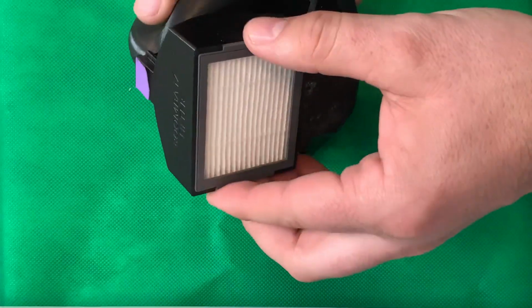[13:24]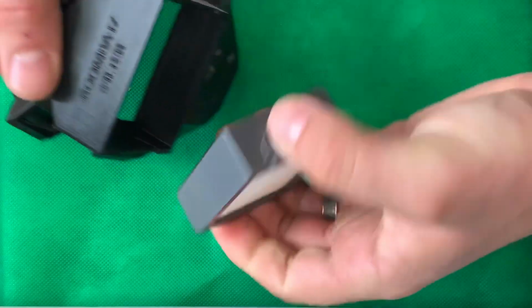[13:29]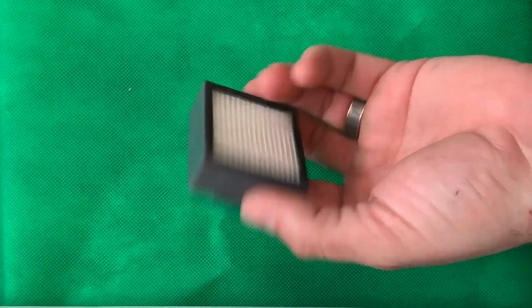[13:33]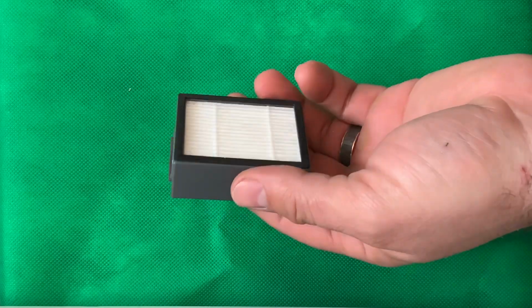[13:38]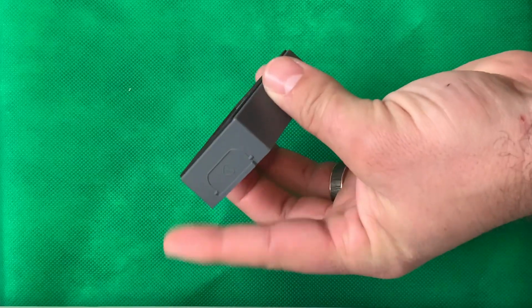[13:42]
Misinformation number two is you can't print airtight. That's not true. There's peer-reviewed publications and evidence in the literature that you can print airtight. Misinformation number three is that the Roomba filters are not able to filter out particles better than a wet t-shirt. That's not true either. A true Roomba filter is HEPA rated. And like I said, it's basically an N99 compared to an N95, which is the standard in the medical profession right now. So anyway, I hope this helps, guys.
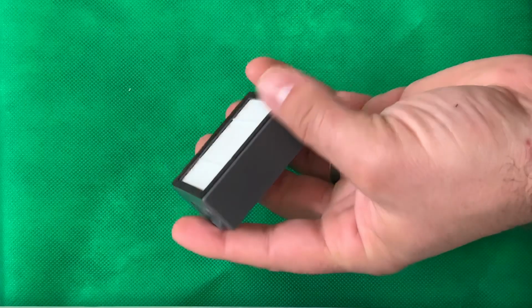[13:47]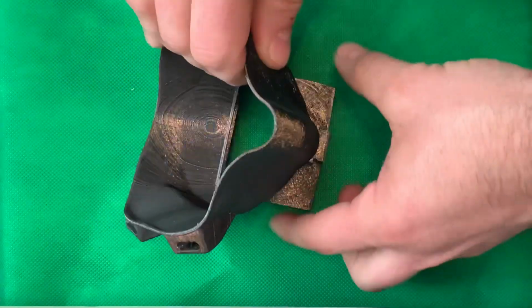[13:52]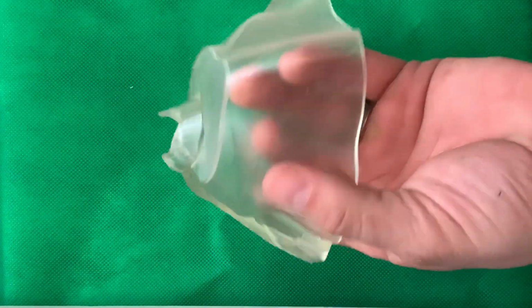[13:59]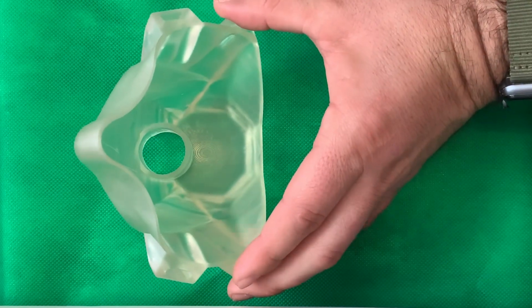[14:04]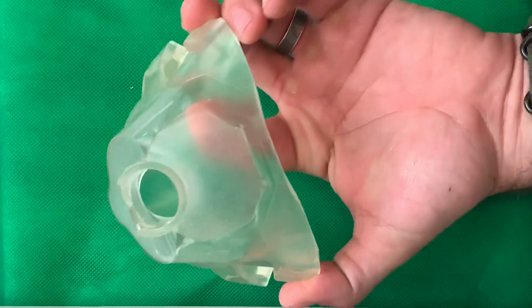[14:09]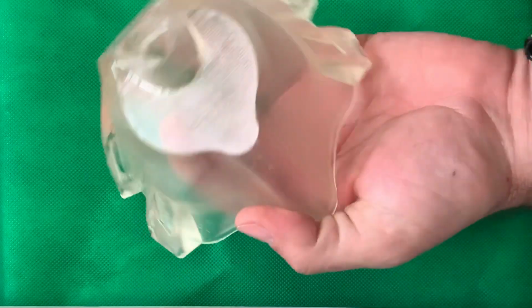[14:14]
If you look at my Thingiverse, there's a lot of files. They're pretty self-explanatory. There's easy print masks. We really designed these so that they could print flat on the build platform like this, and they don't need any supports. They are incredibly easy to print on any printer now. We basically modified the design so that it's super easy. Anybody could do it. The files now are nothing like they used to be when I first originally designed this. They've been reiterated at least 30 times. So this is literally mask 30 here. So yeah, good luck, and let me know if you have any questions.